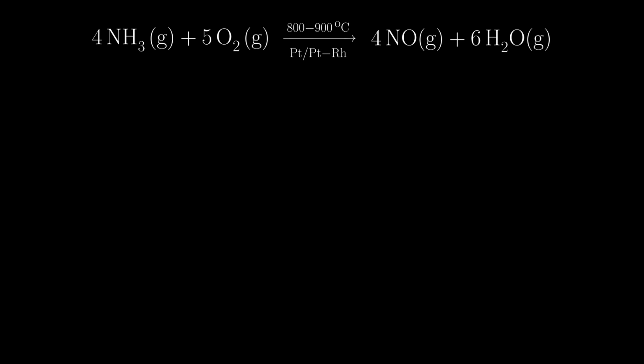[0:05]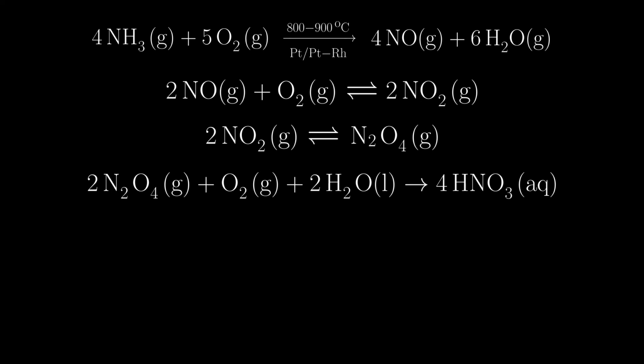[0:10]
Today I will show you the Ostwald process in an experiment. The Ostwald process is used for the large-scale production of nitric acid by oxidizing ammonia.
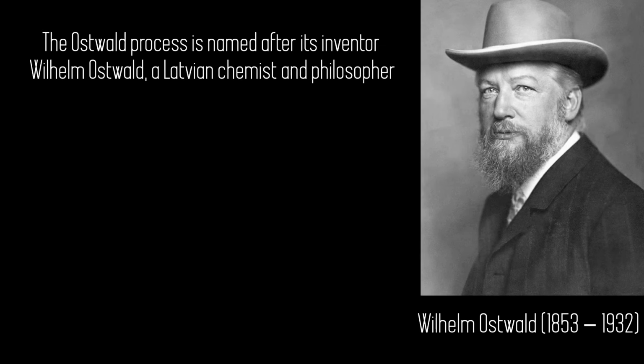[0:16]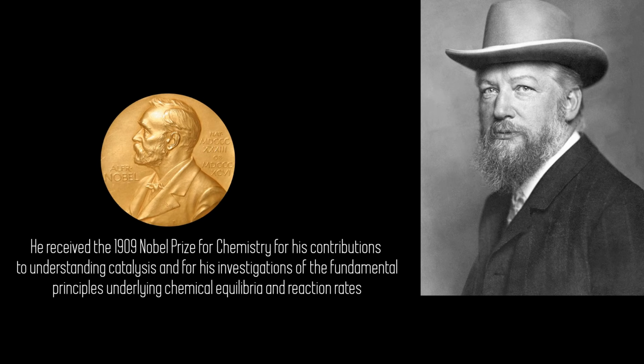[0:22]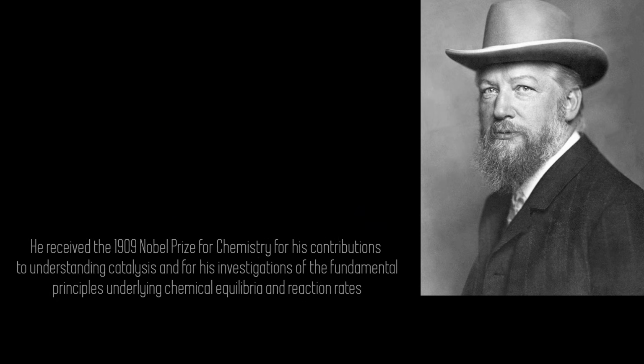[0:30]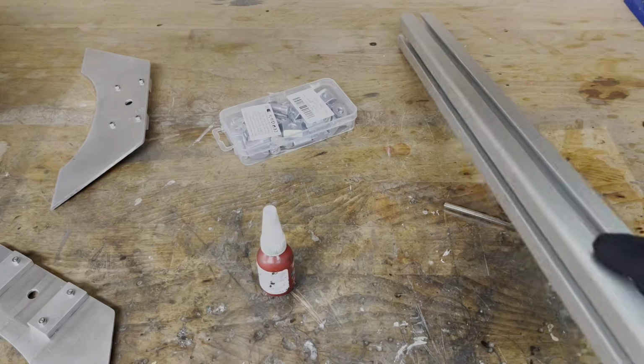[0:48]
Of course, the experiment can also be set up and carried out with ordinary lab stands. In the past, lab stands were made of heavy cast iron. Nowadays, they are made of a cheap alloy and are very wobbly. Therefore, I will first show you how to build a modular, inexpensive lab frame yourself.
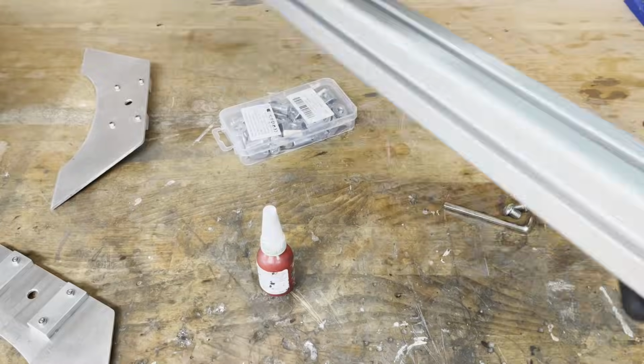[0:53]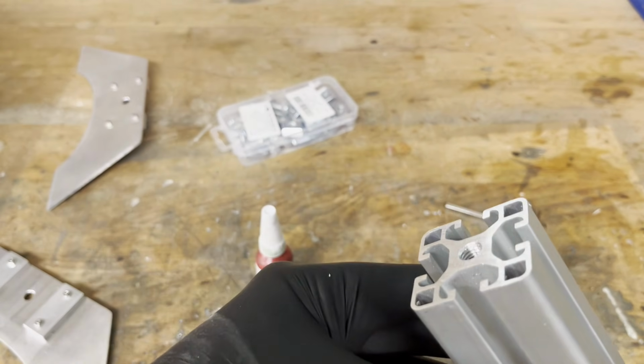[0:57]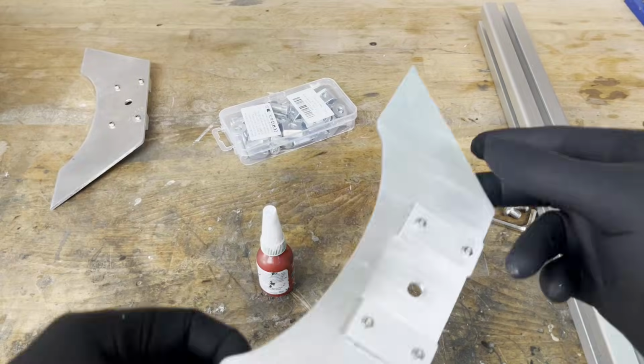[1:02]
My lab frame is based on a 40-40 aluminium extrusion with a length of 50 cm. I cut an M6 thread at both ends. The feet are made from a 4 mm aluminium plate which I cut to shape with a jigsaw.
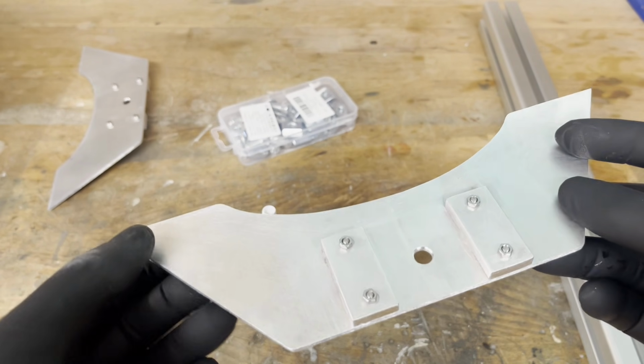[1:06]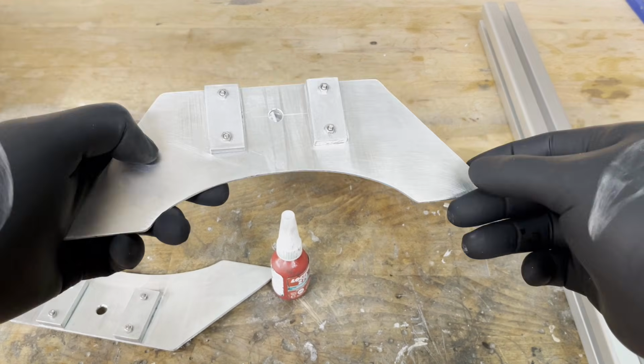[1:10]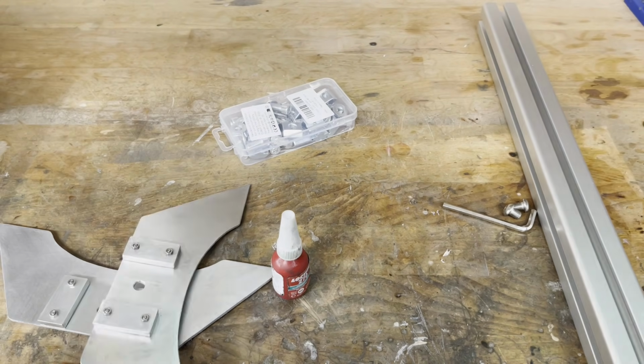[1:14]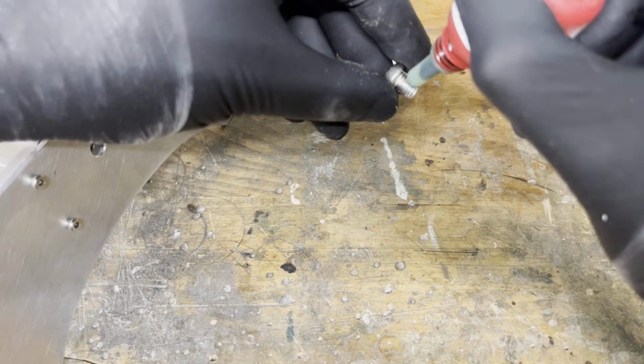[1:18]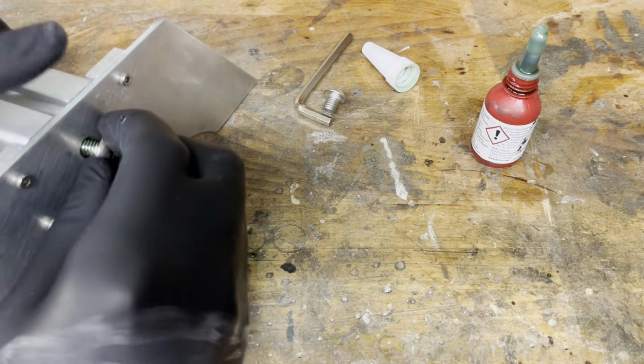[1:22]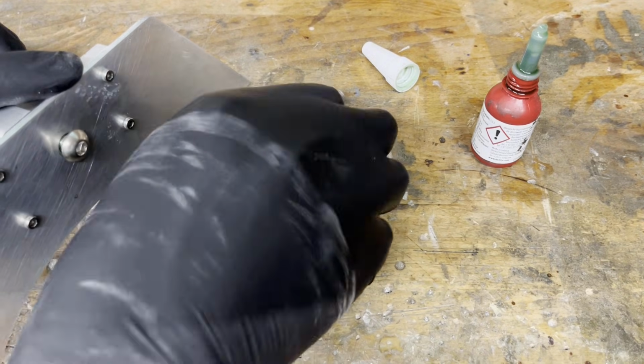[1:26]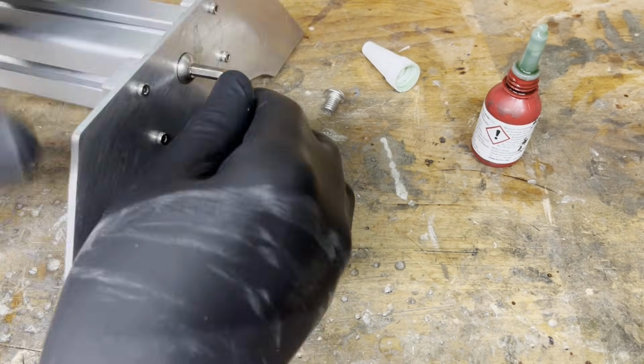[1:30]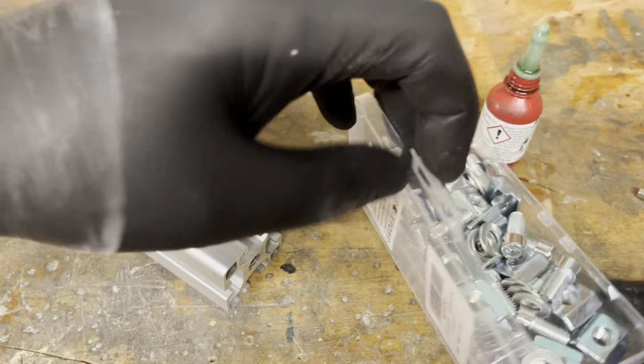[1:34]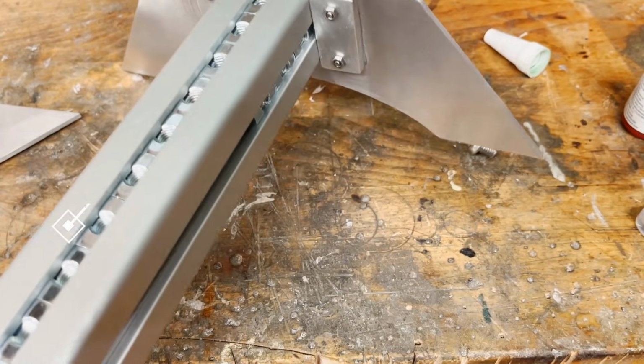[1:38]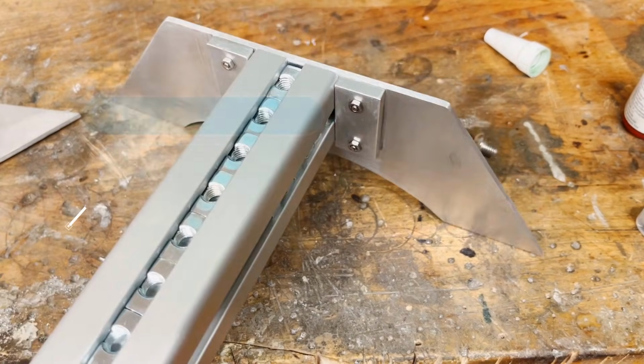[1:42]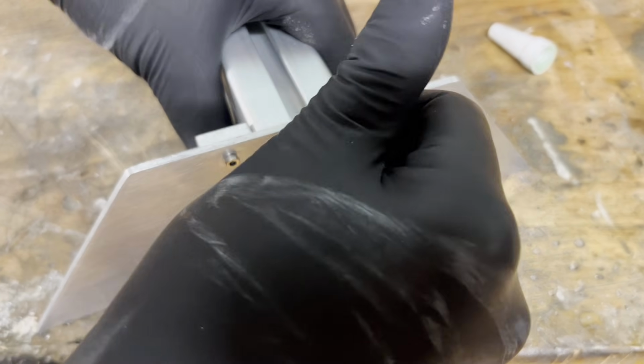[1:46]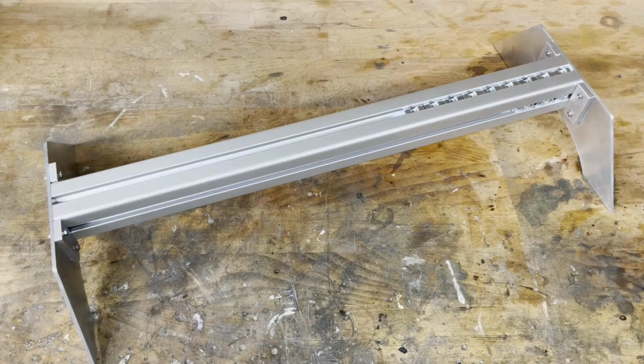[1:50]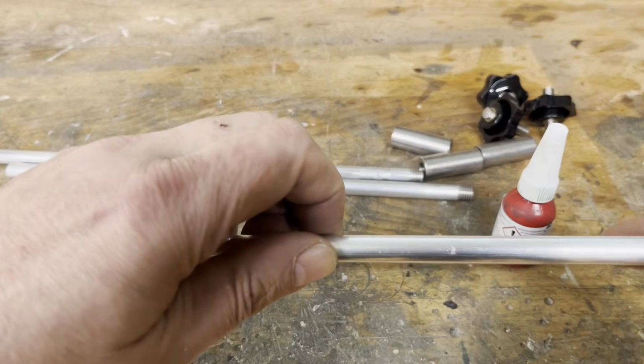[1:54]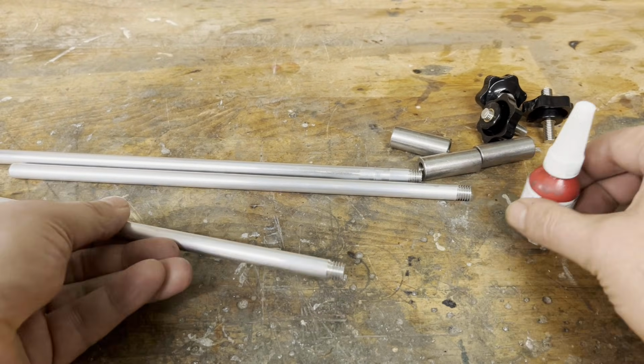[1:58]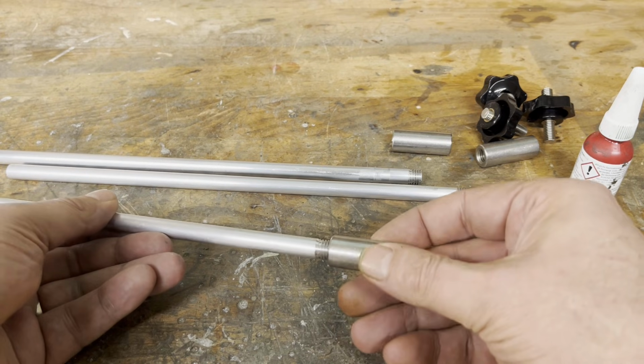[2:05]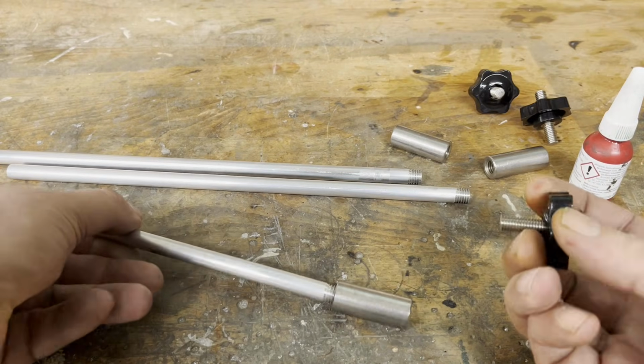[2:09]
The rods are made of aluminium with a diameter of 10 mm. I use them because they are easy to thread. An M10 by M8 adapter is screwed onto the M10 thread on the aluminium rods. Then an M8 threaded rod and a star grip nut are added. This allows the rods to be moved and tightened on the extrusion.
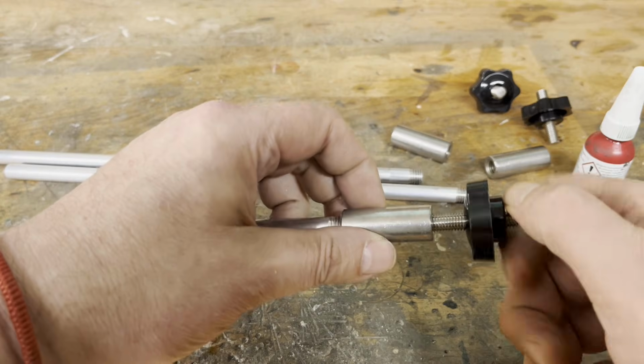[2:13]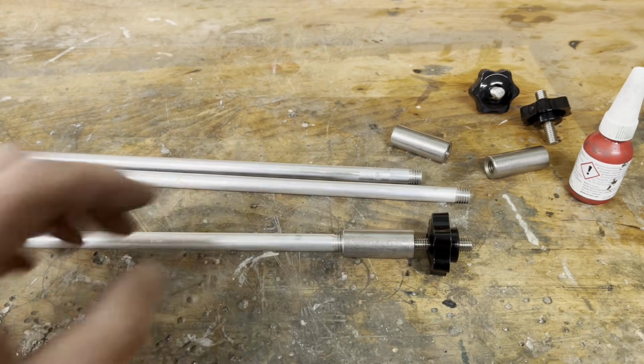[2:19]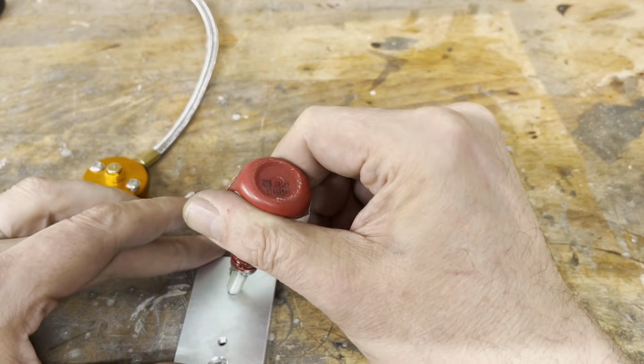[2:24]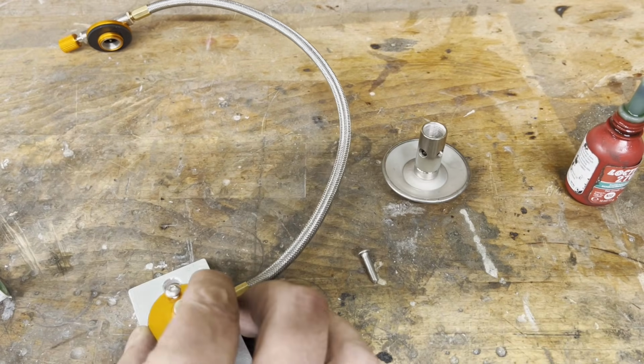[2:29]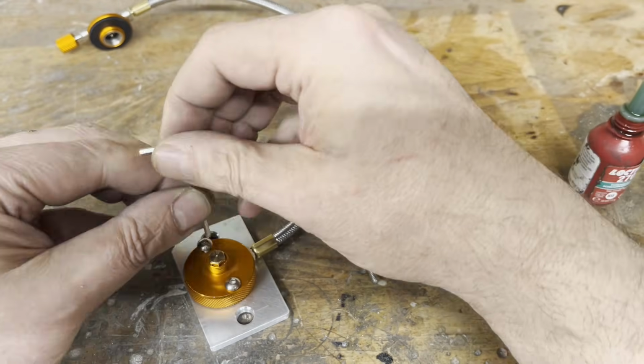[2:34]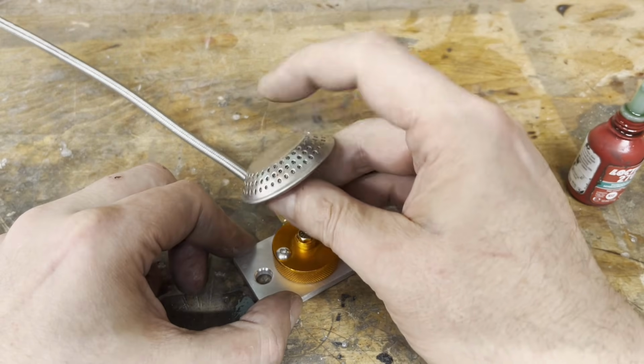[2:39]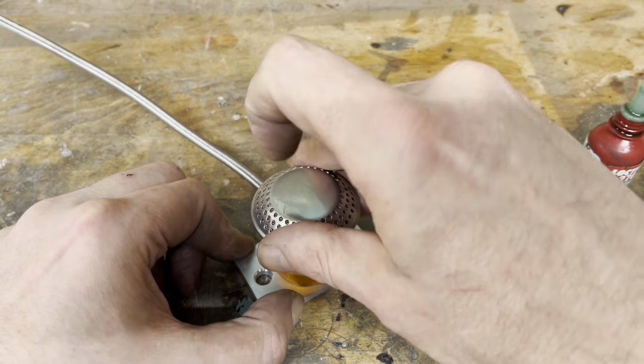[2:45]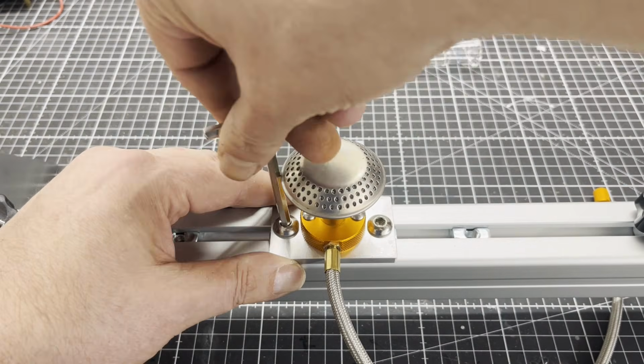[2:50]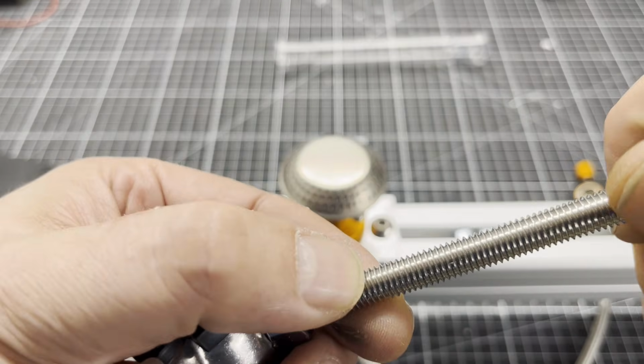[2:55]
The required burner was obtained from a camping supply store. I made an adapter plate for it so that I could mount it on the extrusion. Instead of lab clamps, I use pipe clamps from the DIY store, as they are much cheaper.
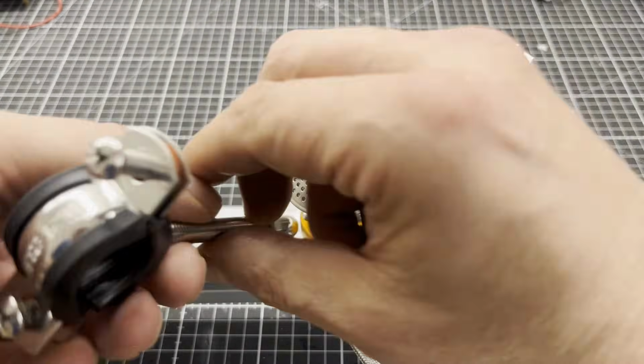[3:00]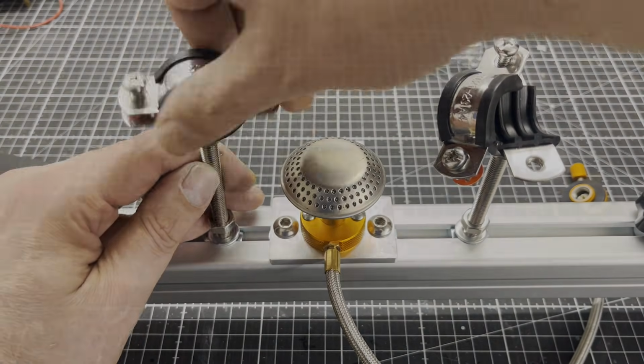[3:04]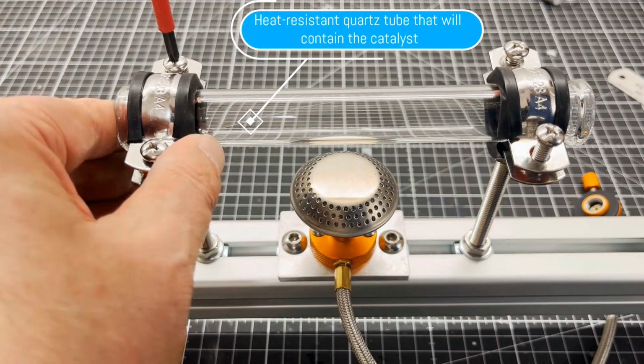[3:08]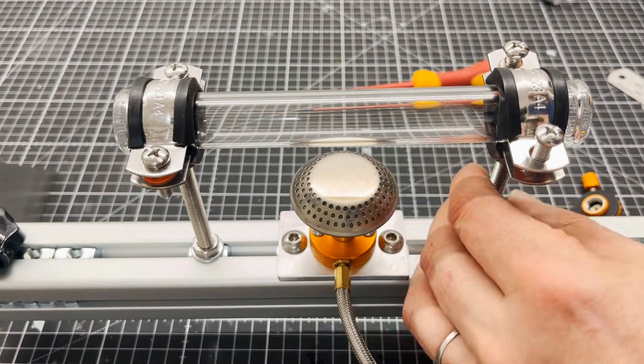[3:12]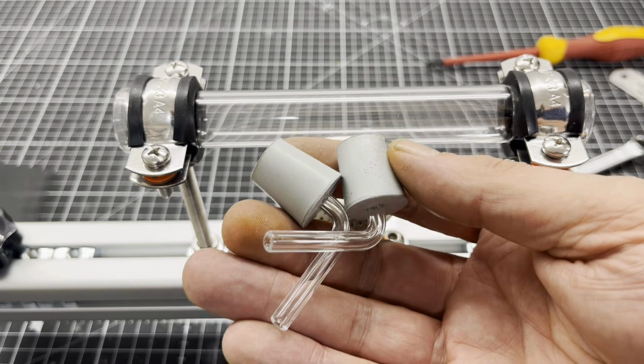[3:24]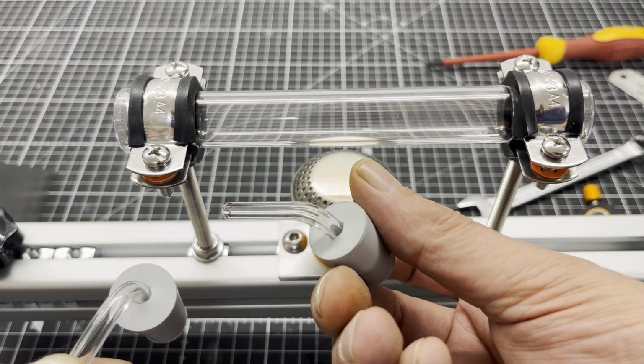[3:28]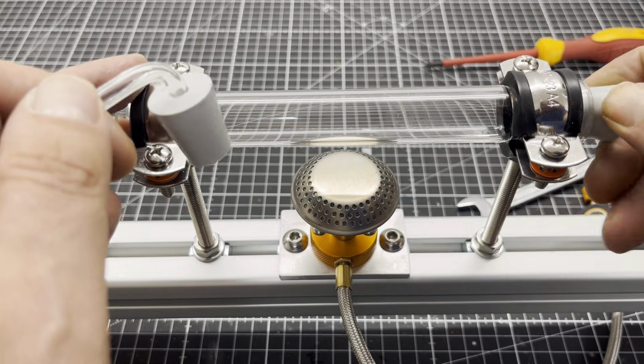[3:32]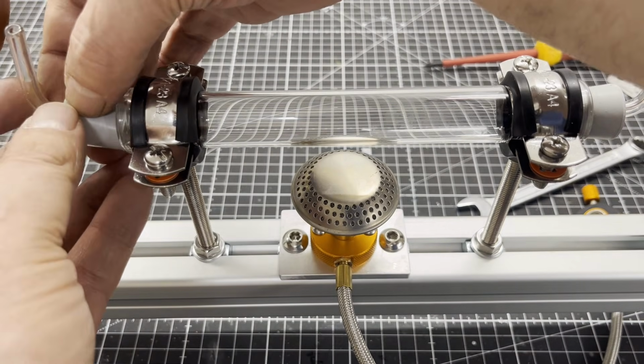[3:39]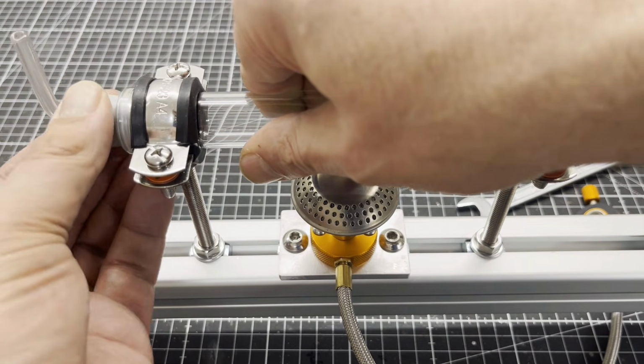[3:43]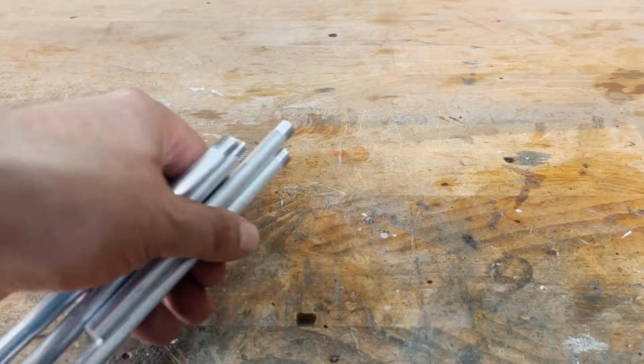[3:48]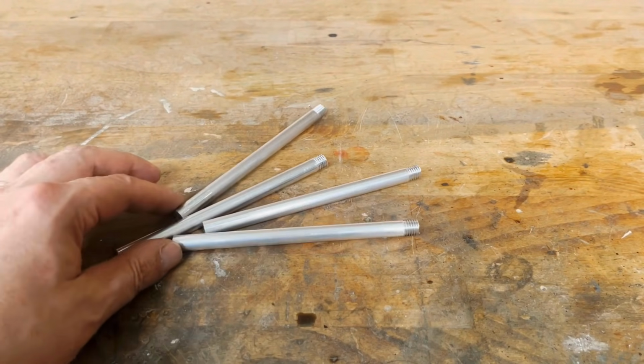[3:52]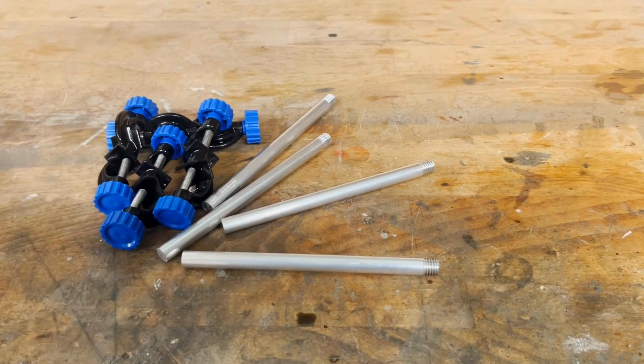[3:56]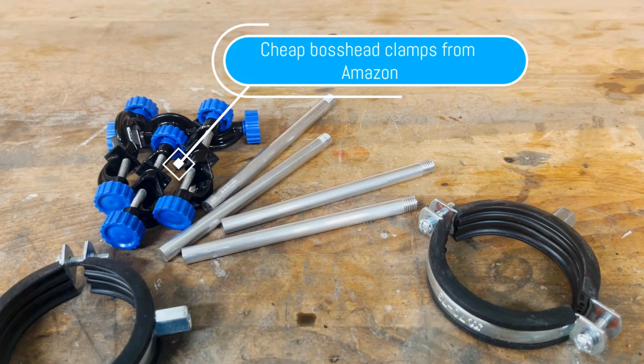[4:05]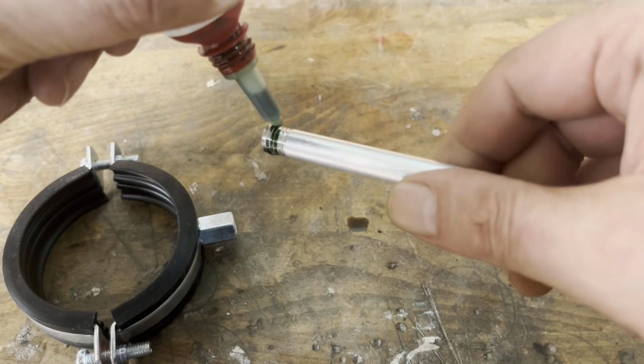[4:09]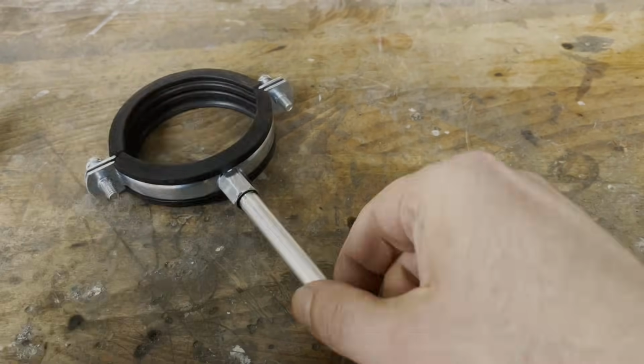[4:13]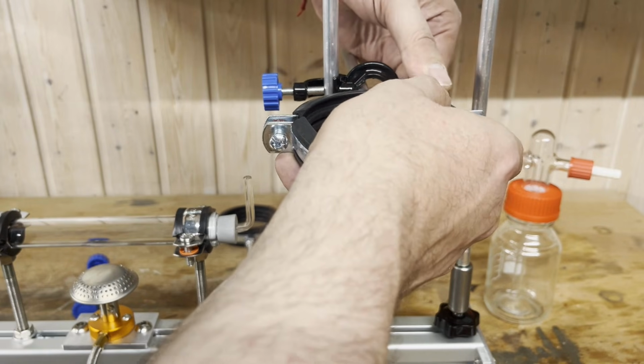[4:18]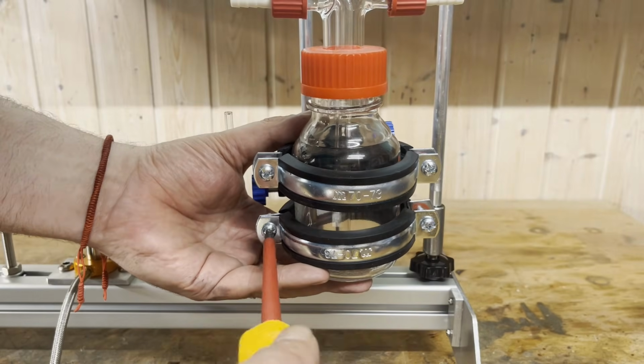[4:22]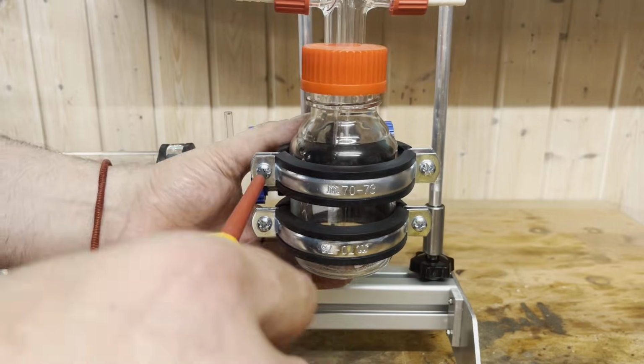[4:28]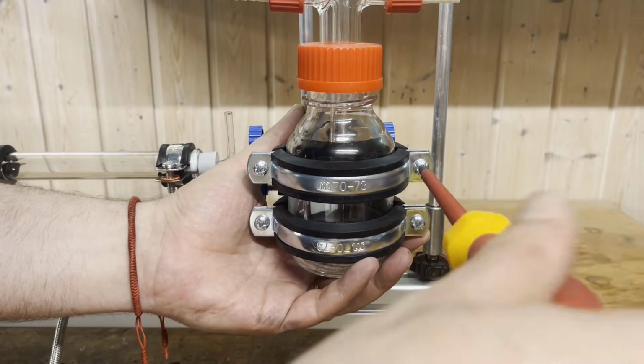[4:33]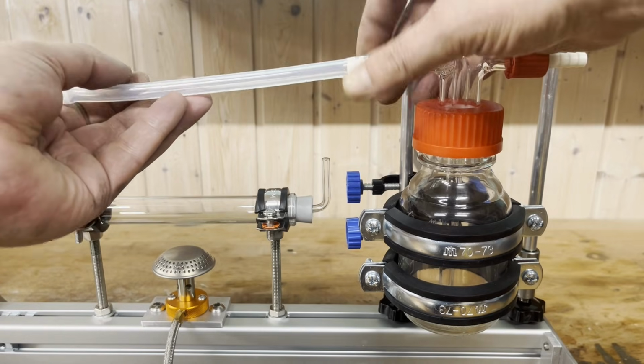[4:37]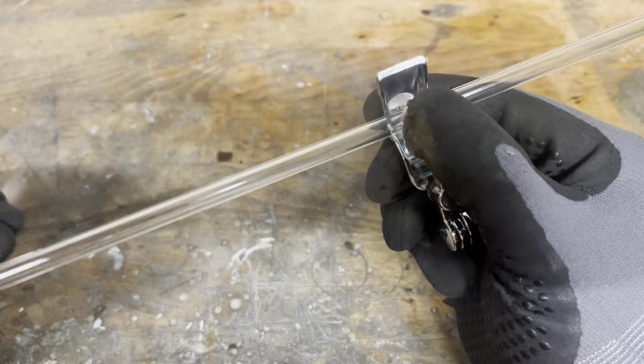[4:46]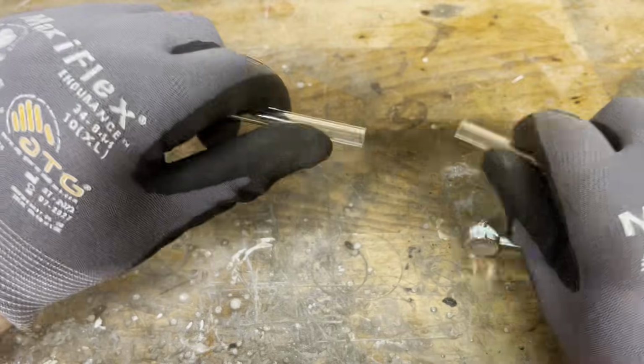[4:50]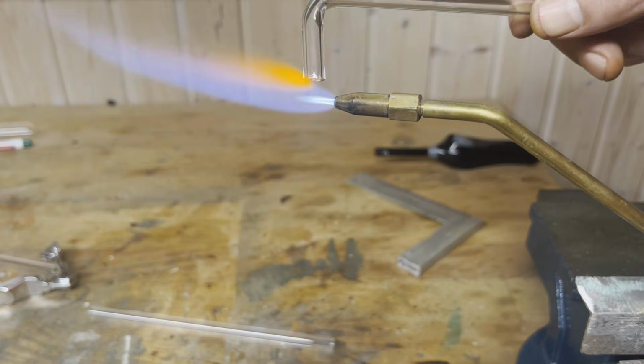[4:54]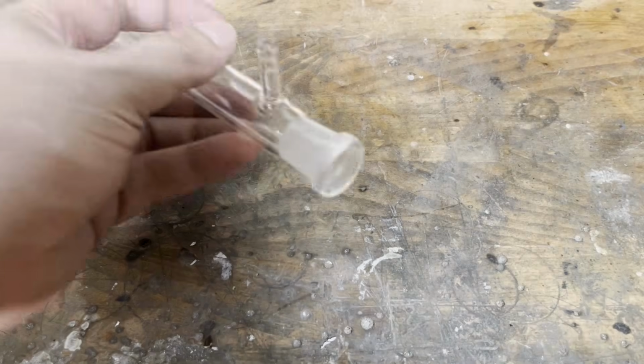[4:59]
When you set up an experiment in chemistry, you actually always have to bend some customized glass tubes. I use silicone tubing almost exclusively for flexible connections. I always have different sizes in stock as well as adapters. Sharp edge glass tube ends should always be fire polished to prevent injury.
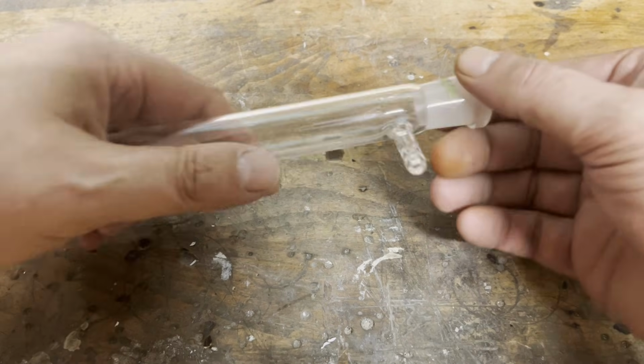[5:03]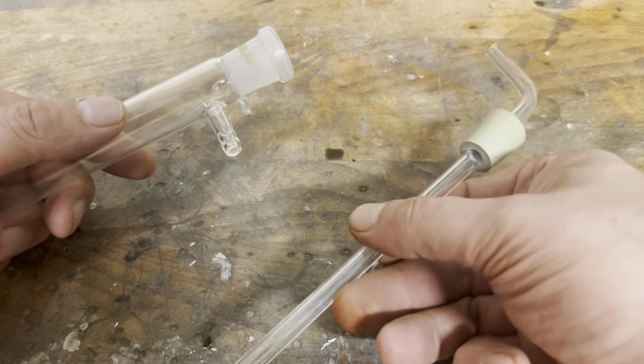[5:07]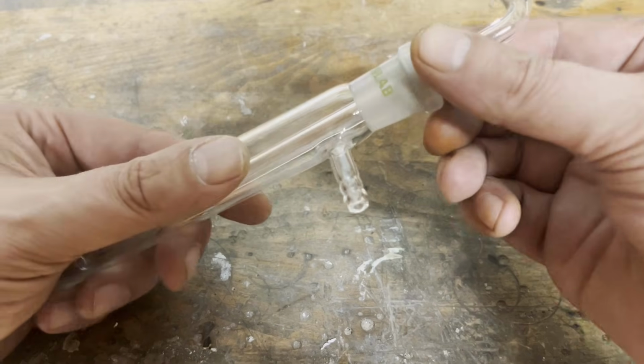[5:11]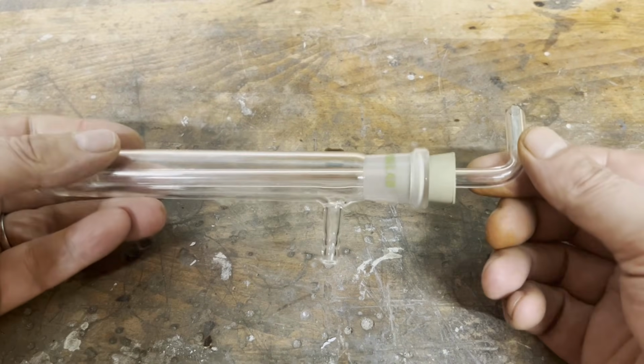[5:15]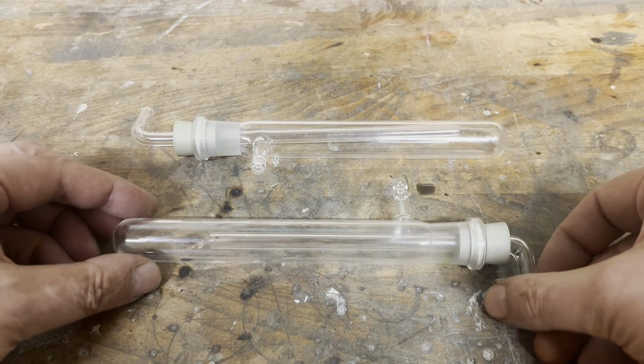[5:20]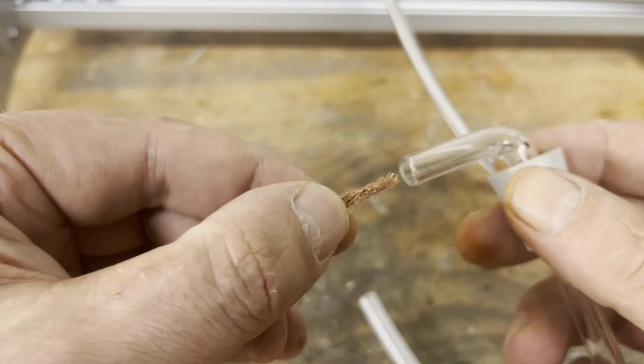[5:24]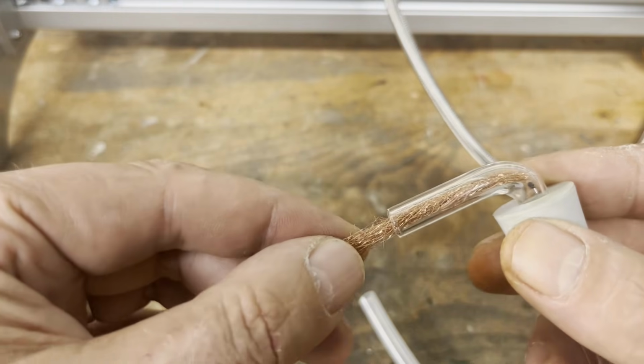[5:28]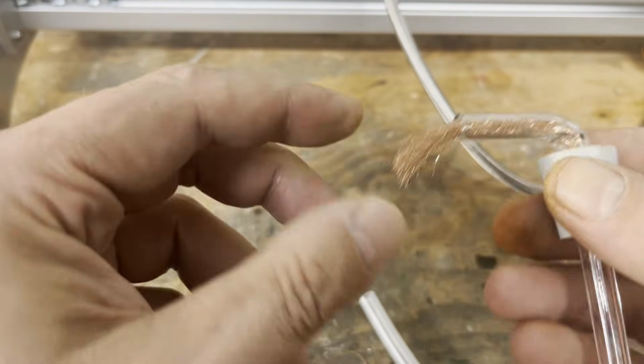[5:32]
Since ammonia air mixtures with an ammonia content of 15.5 to 27% are explosive, I made a flashback arrestor by inserting copper wool into the glass tube.
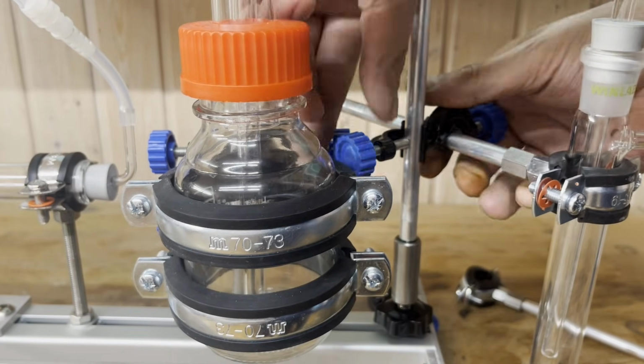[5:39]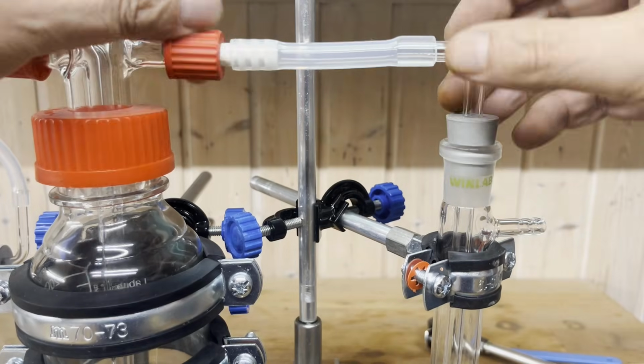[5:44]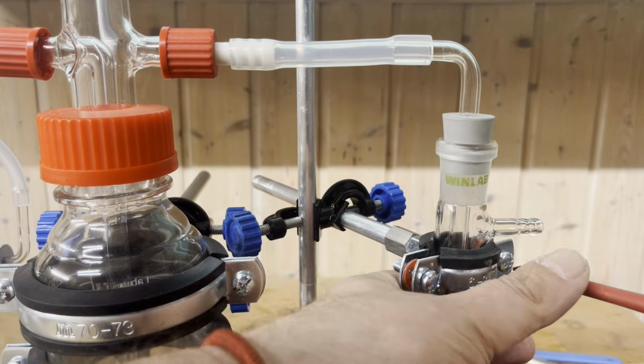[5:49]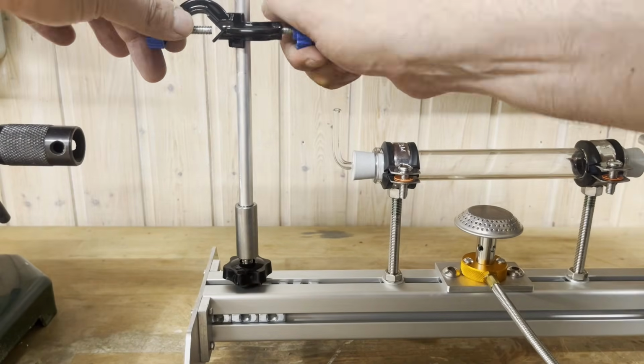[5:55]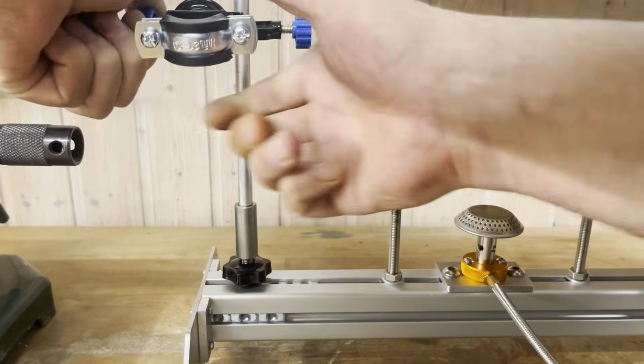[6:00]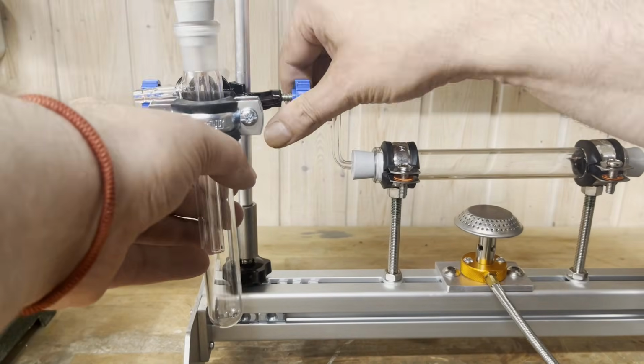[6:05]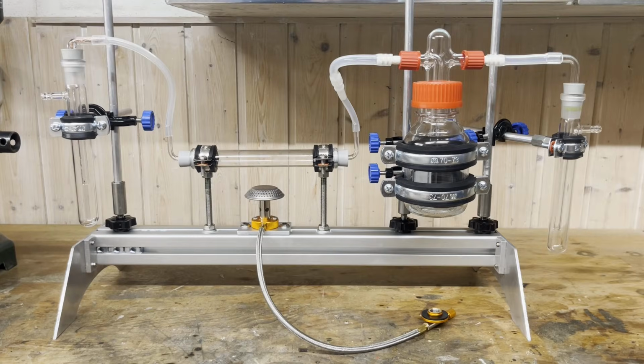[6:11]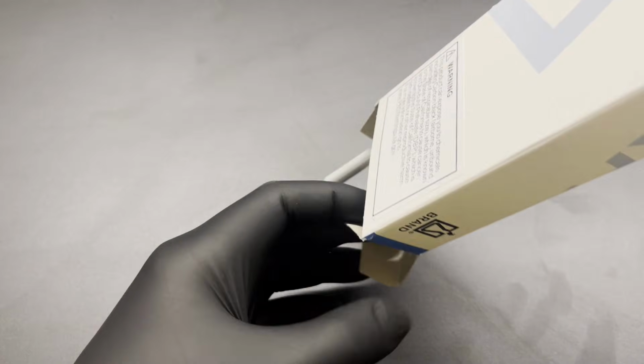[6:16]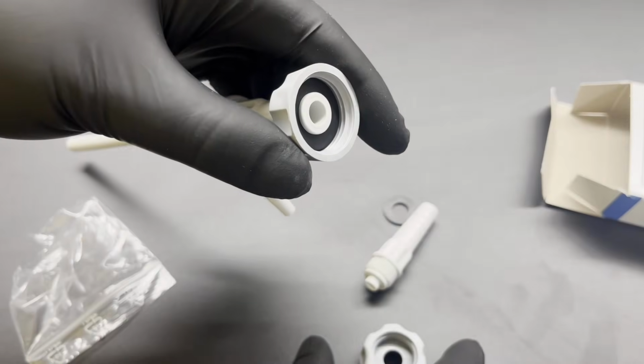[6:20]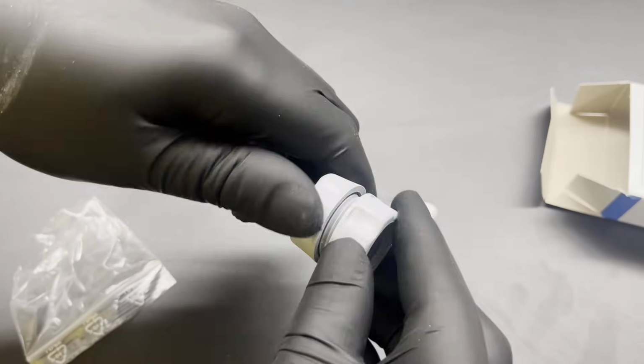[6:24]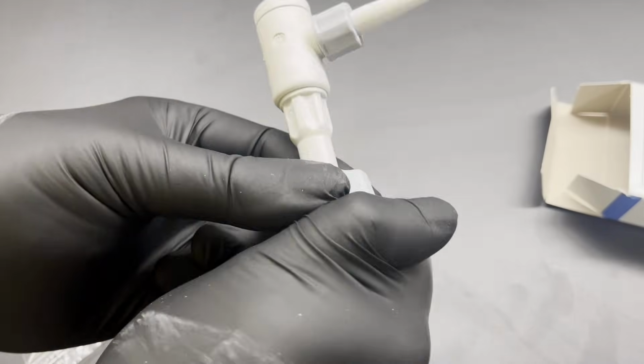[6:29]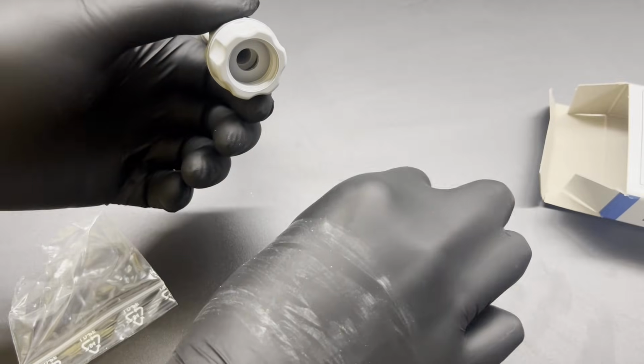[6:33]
For the experiment, I use a vacuum ejector, which has the advantage that unreacted ammonia and nitrogen oxides are simply sucked away. Compared to an electric vacuum pump, it has the advantage that the vacuum ejector is insensitive to the corrosive ammonia and nitrogen oxides.
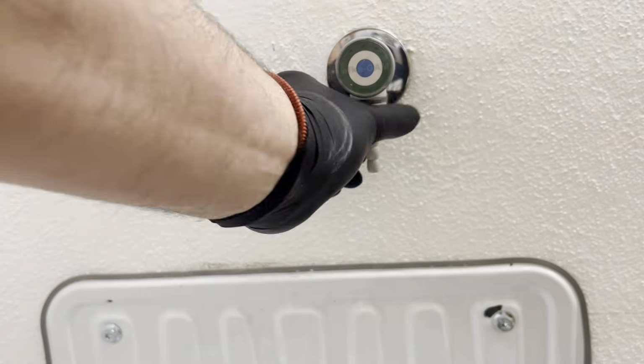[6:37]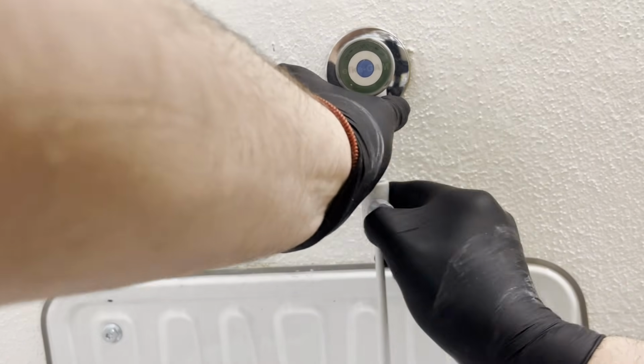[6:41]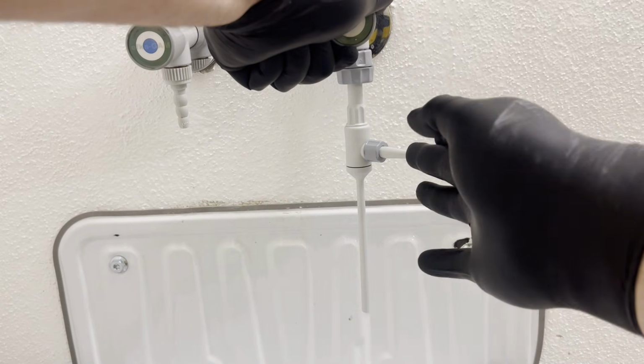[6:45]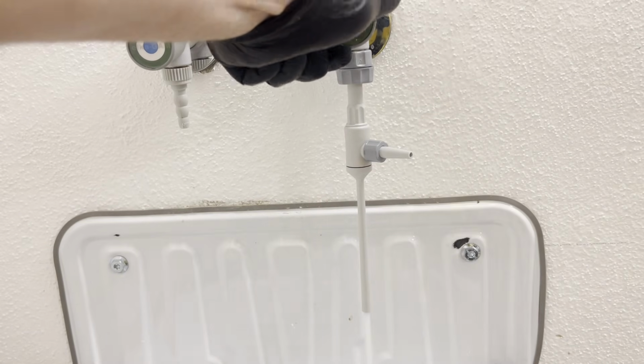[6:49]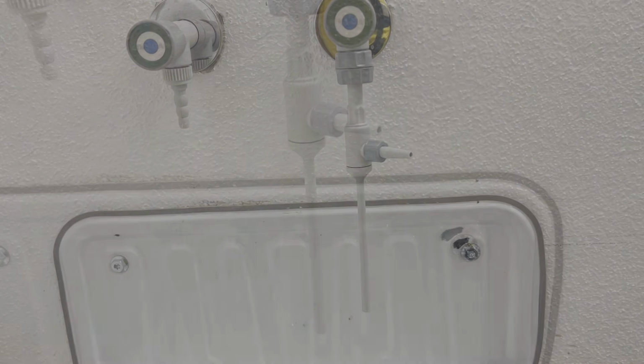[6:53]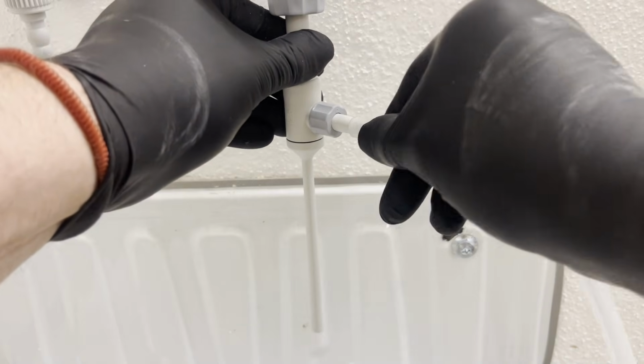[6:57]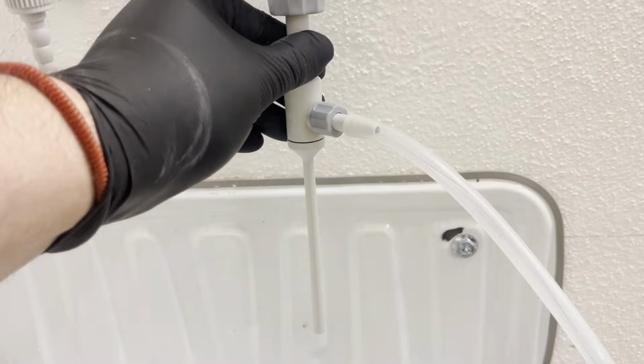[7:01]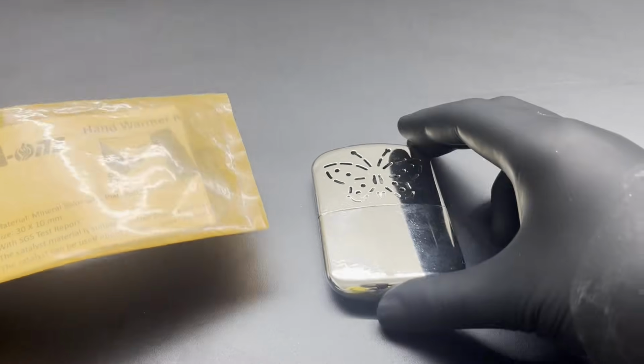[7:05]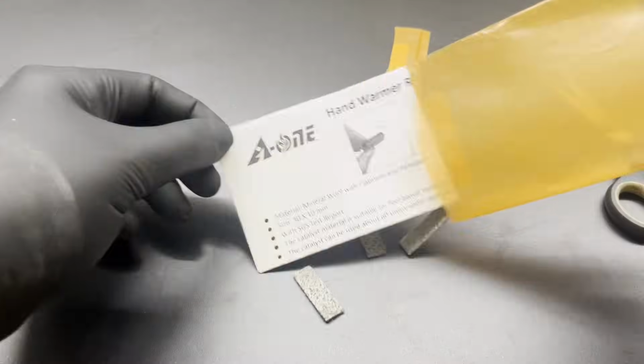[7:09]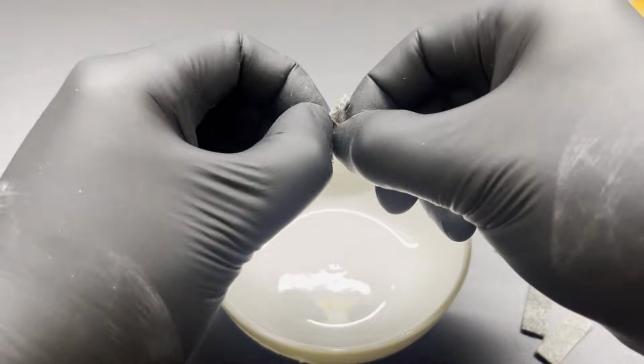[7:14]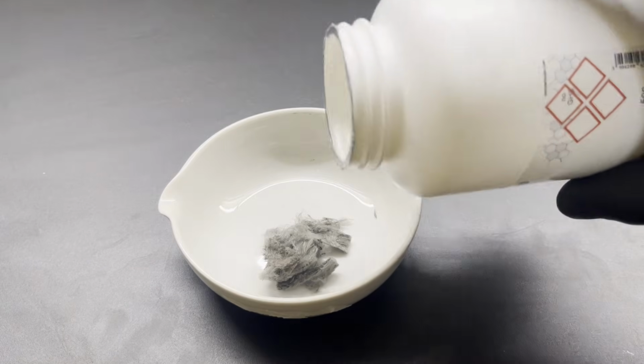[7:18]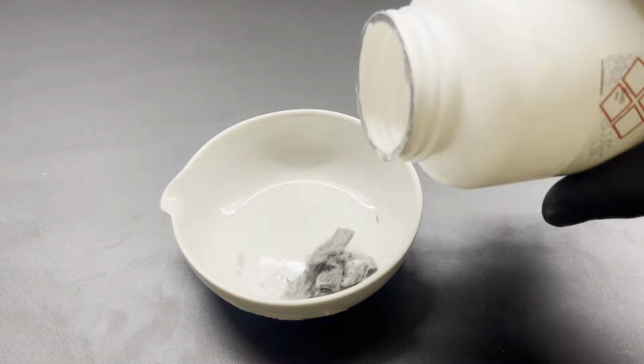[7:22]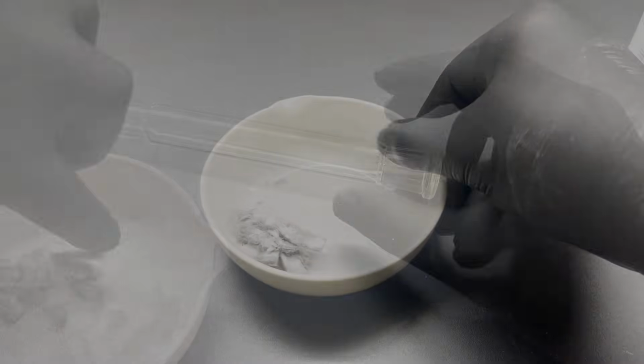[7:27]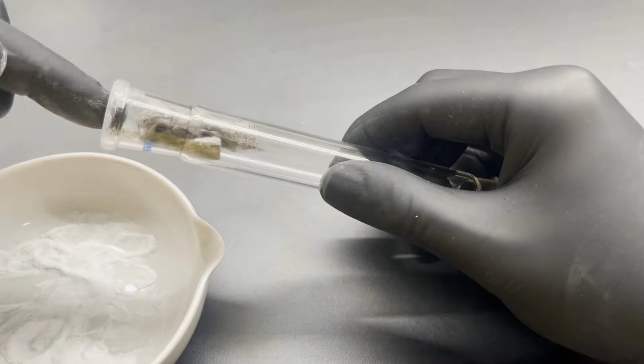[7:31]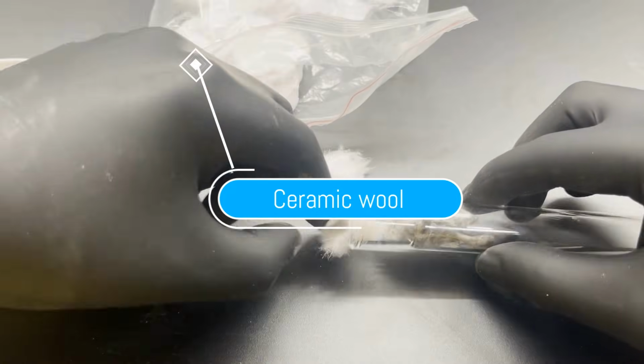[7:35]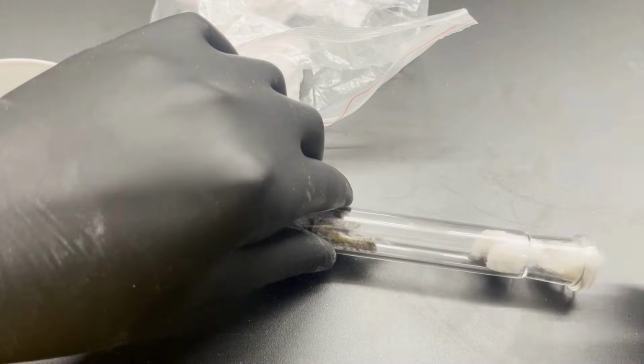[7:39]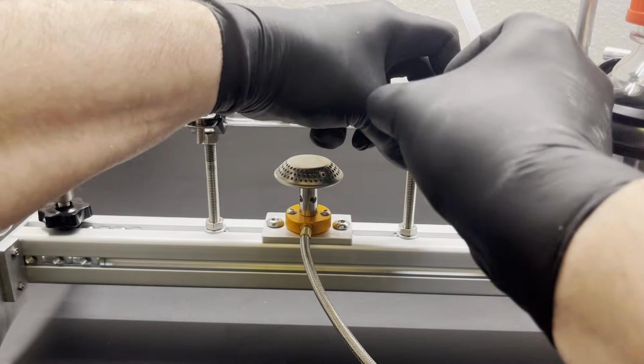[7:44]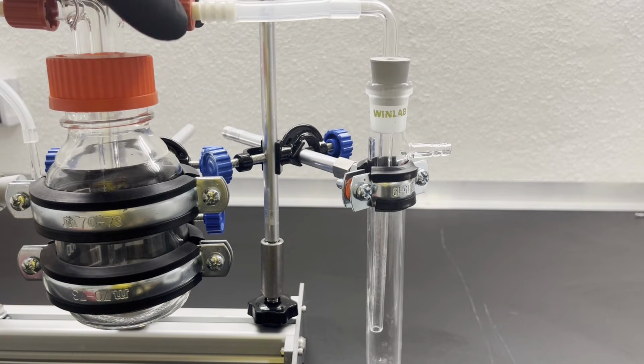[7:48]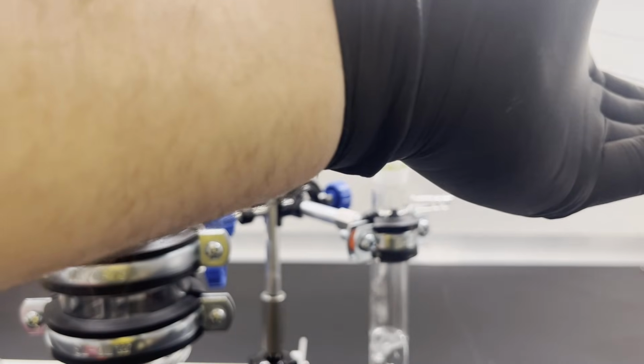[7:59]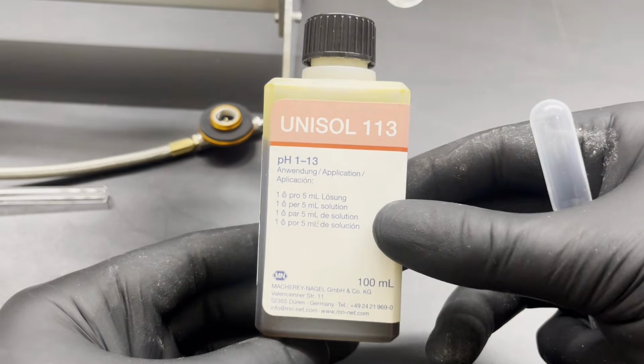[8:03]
As with my Döbereiner's lamp, I use platinum mineral wool from hand warmers as a catalyst. As a second catalyst, I use aluminium oxide as I did in my Haber-Bosch video. I use diluted universal indicator to detect the formed nitric acid.
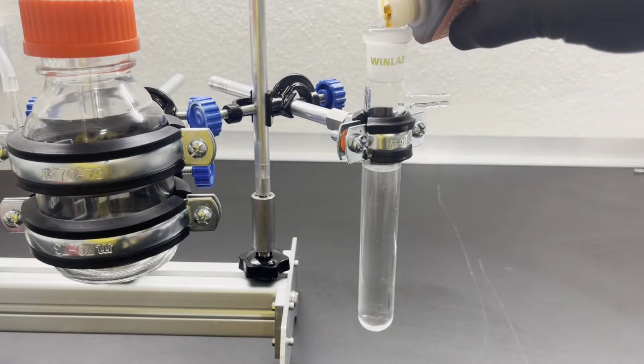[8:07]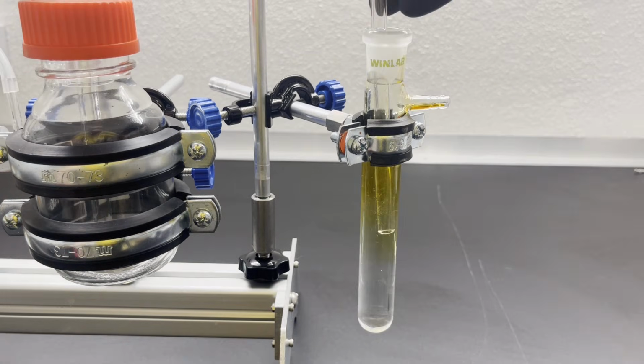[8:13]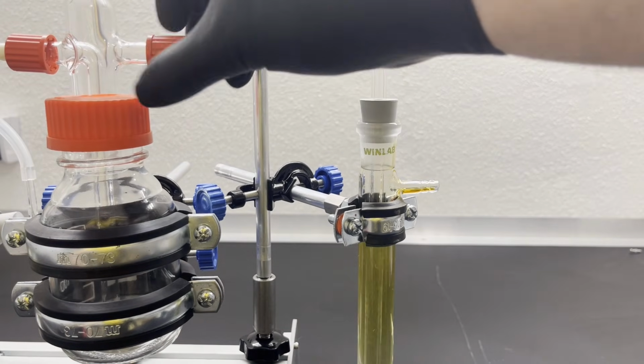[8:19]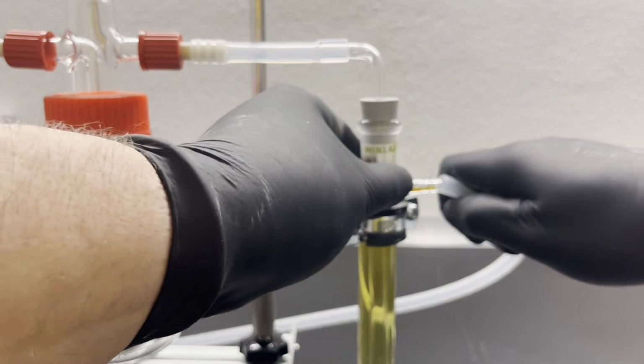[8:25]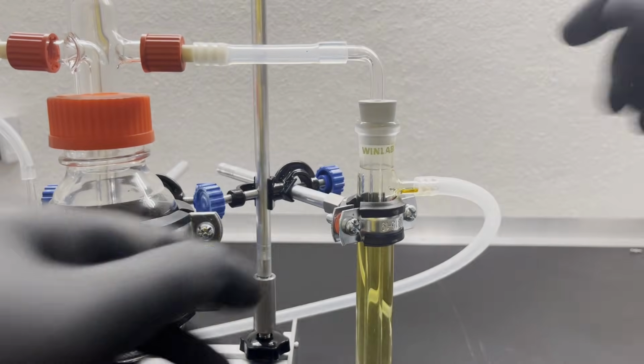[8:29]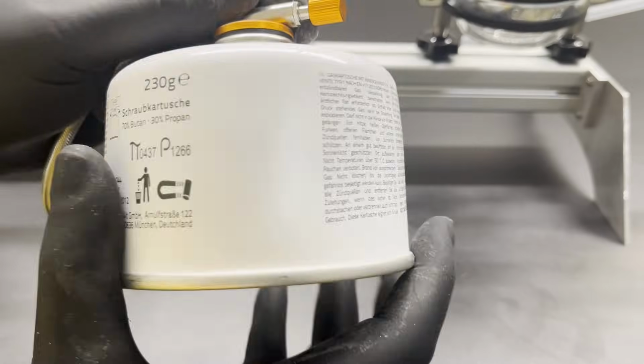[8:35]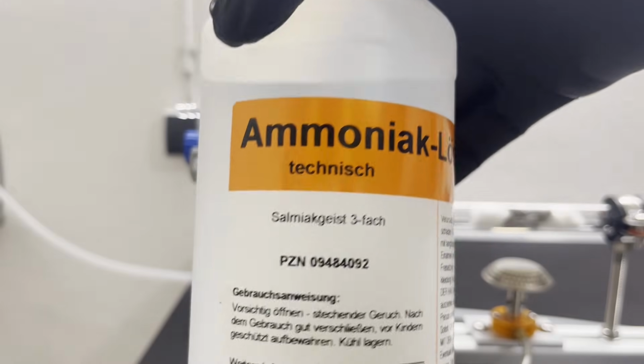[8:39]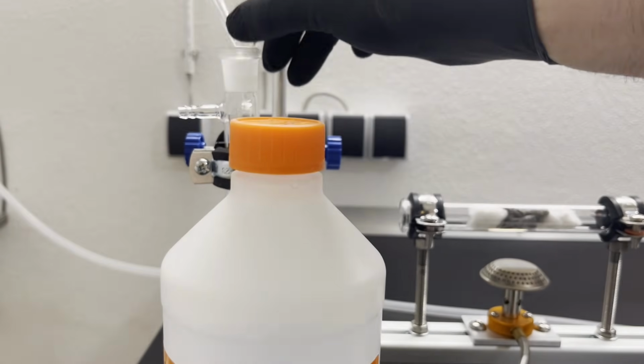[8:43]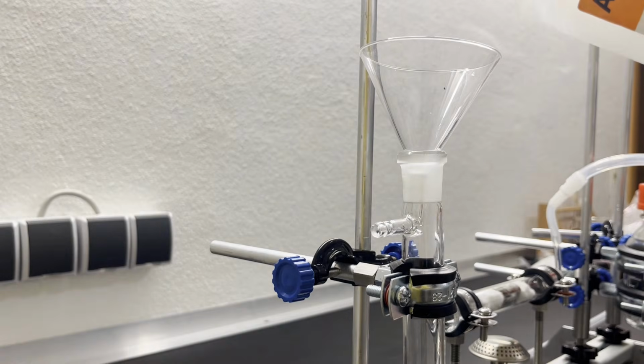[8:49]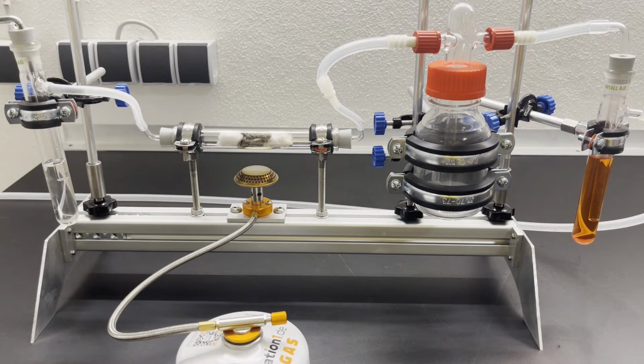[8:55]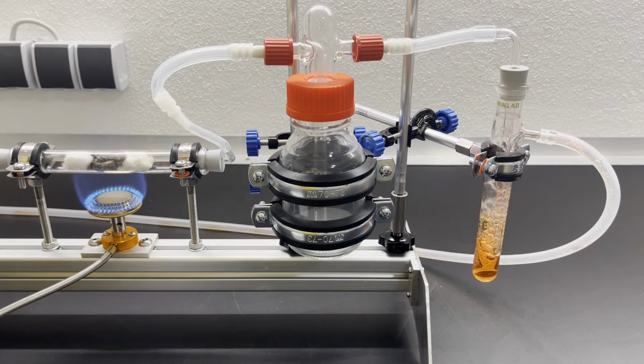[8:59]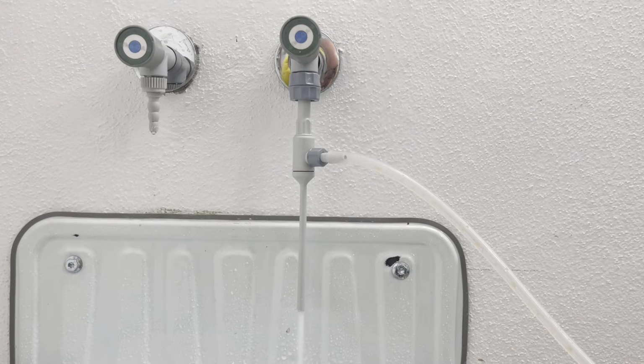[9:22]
Here you can see white mist in the gas washer bottle. This indicates that the ammonia content of the gas mixture is too high. Ammonium nitrate and nitrite are formed. It took me a while to set the flow rate correctly. The contact time at the catalyst must only be short, otherwise the nitrogen monoxide formed will break down into nitrogen and oxygen again if the temperature is too high.
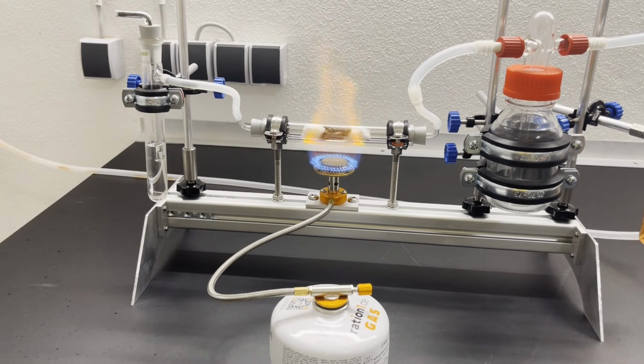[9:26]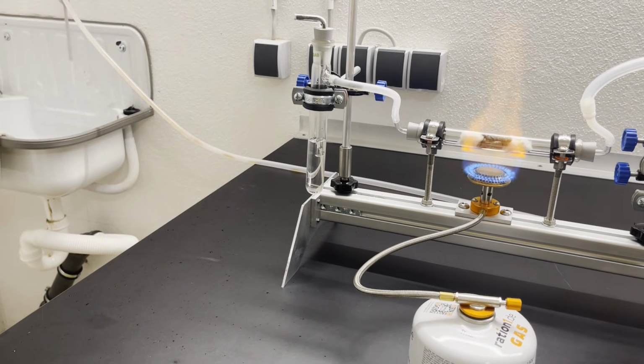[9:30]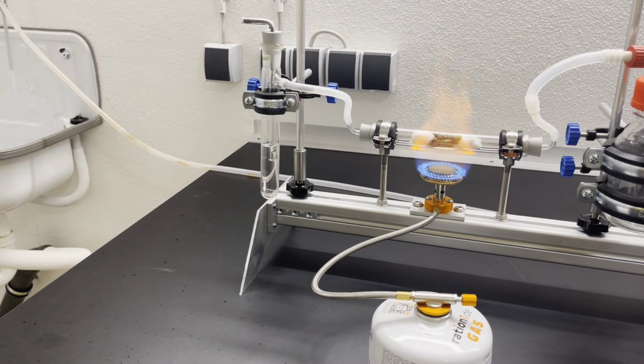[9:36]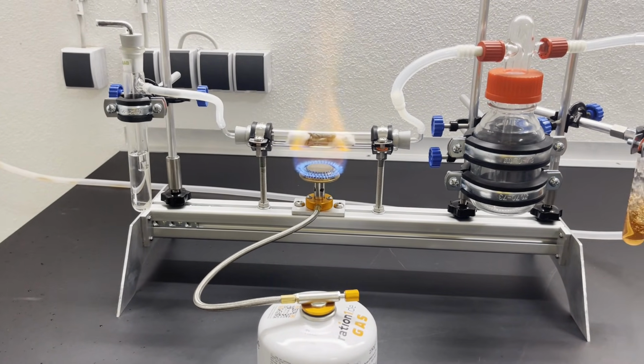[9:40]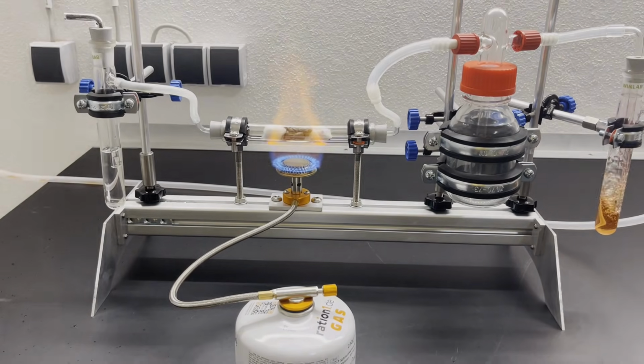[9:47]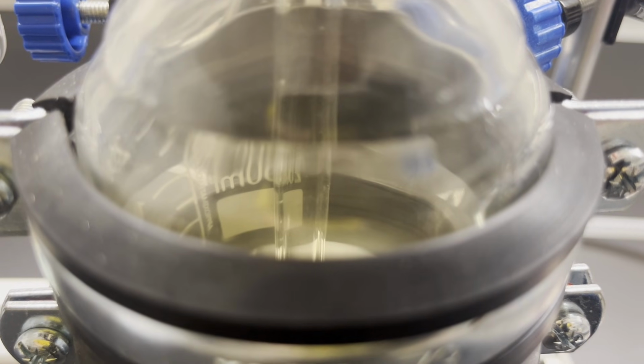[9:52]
After hours of experimenting, I finally succeeded. The gas washer bottle began to fill with brown nitrogen dioxide and the indicator solution turned deep red.